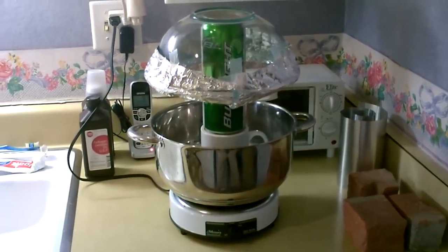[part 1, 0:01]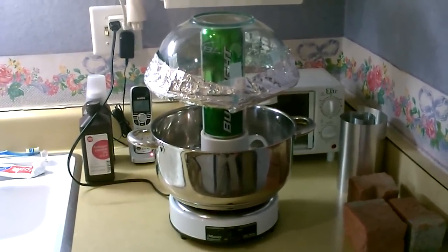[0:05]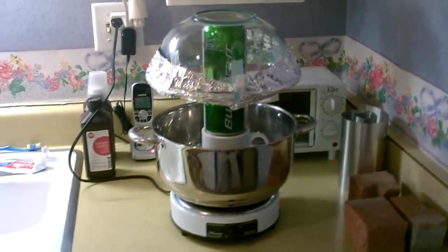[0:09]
Just a quick bit to show you how to make one of these DIY water distiller setups. This is my second, or jumbo, version.
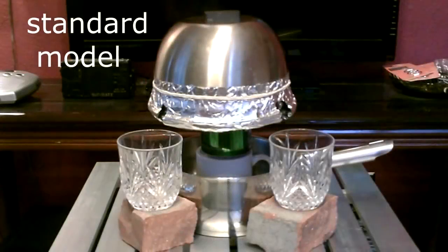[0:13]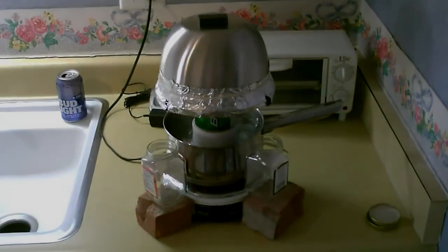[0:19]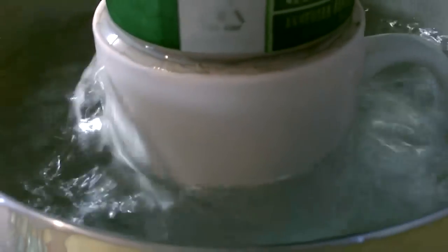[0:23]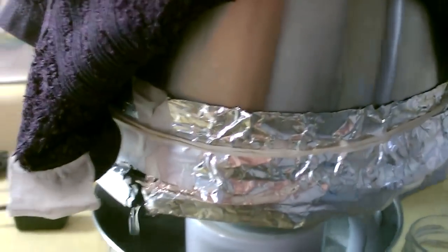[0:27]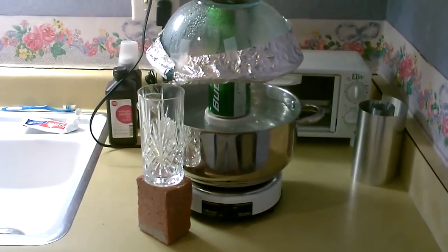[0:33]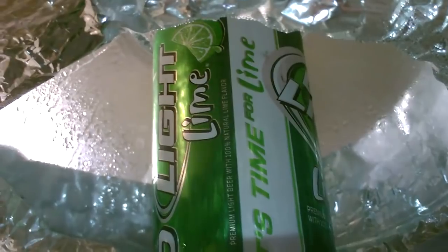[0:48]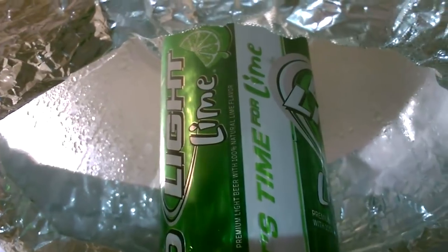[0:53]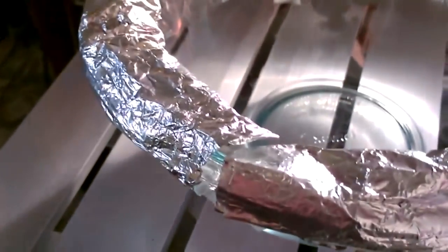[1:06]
A lot bigger. Quick shot of the underside. It's working great. All right, you can see the size of the trough on this one, really big. That'll hold a lot of water. All the water comes out in one spot right there.
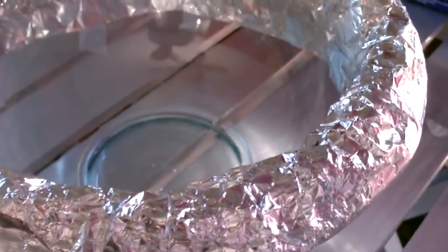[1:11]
Okay, this is my tap water. That's disgusting. That's really bad. Let's do another test on that. Yep, 620, 630. Holy smokes.
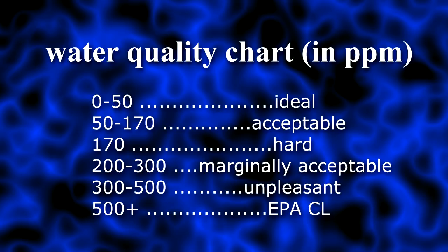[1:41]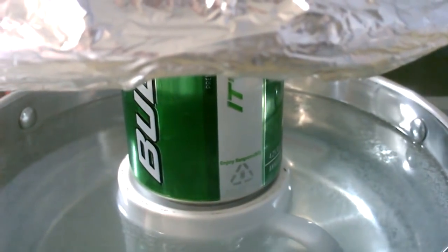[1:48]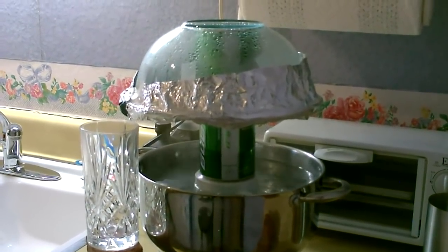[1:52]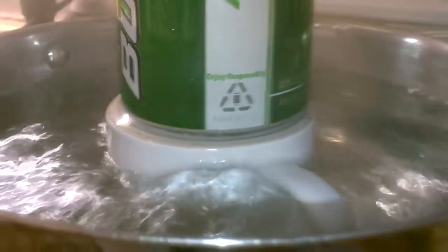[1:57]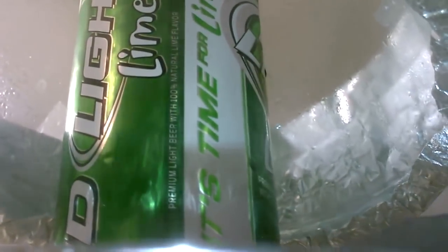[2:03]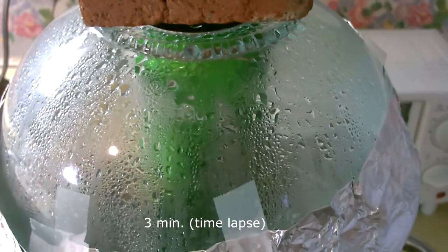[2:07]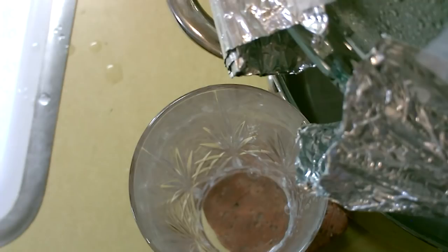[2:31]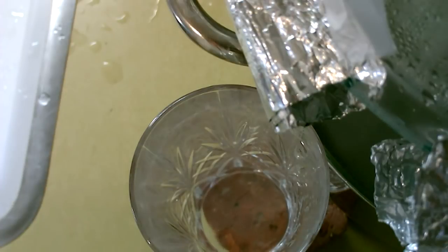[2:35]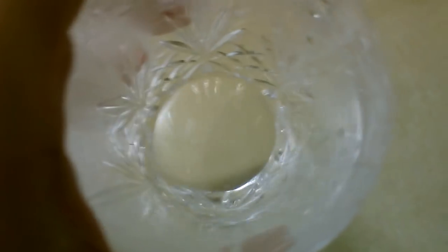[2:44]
Now let's distill it. I'll take another reading. So, let's go. All right, now let's take some water quality readings.
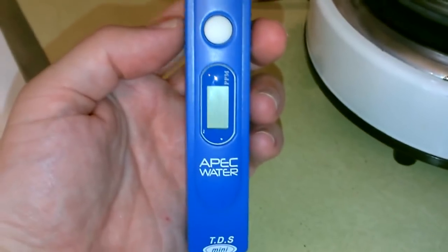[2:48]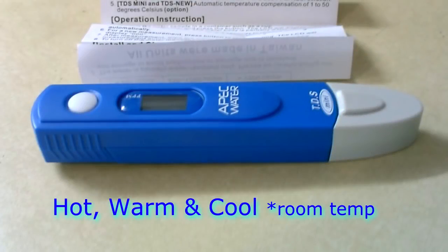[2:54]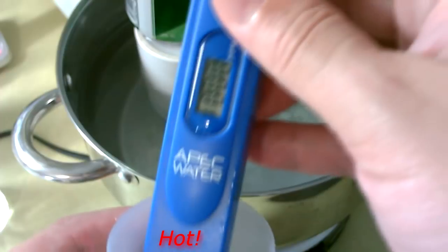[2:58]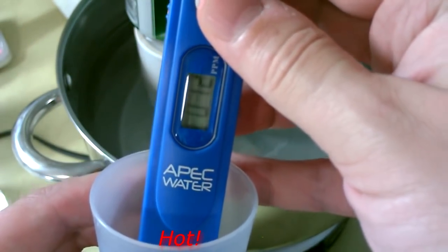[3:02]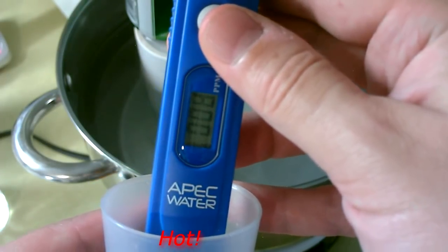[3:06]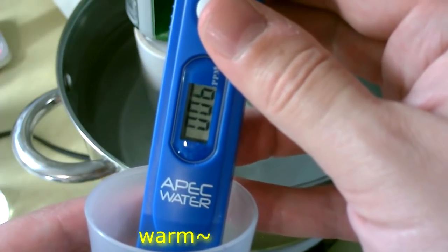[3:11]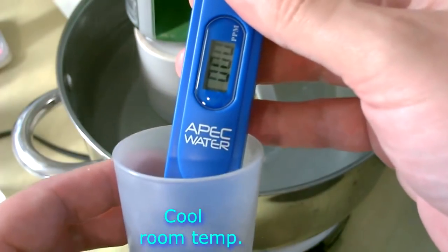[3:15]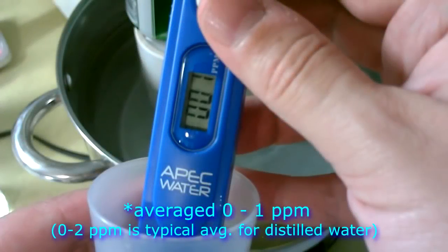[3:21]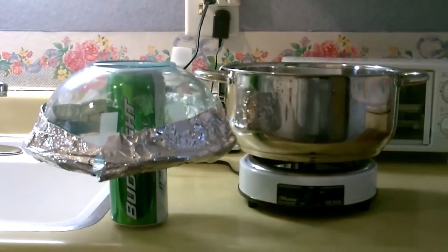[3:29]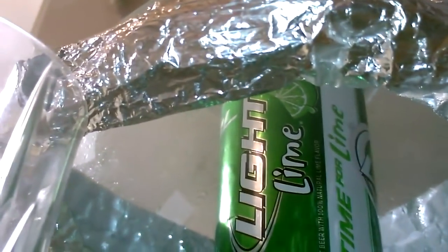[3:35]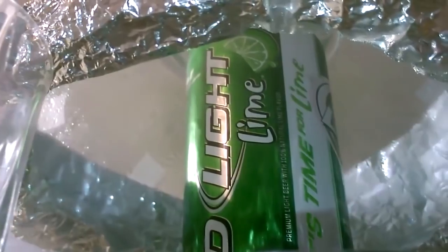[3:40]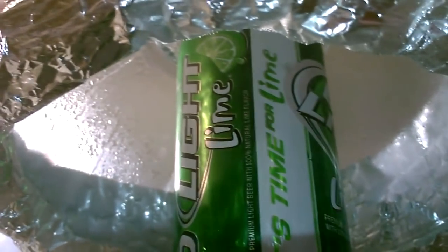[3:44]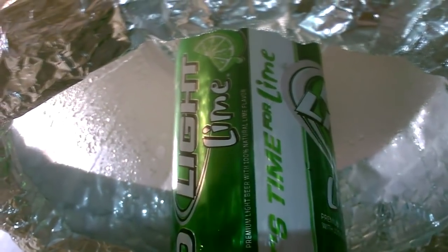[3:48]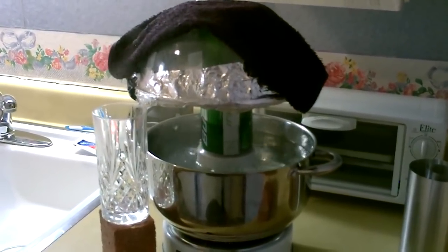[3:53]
Again, this one's got the really big trough on it, so it's going to hold a lot of water. You want to double, triple, or even quadruple the water output, just put some cold cloths on top of the glass.
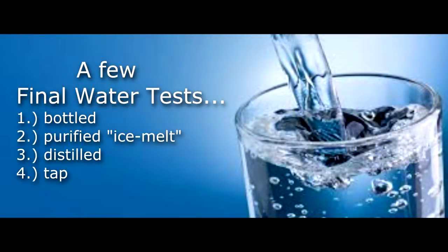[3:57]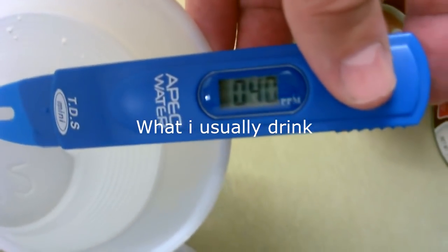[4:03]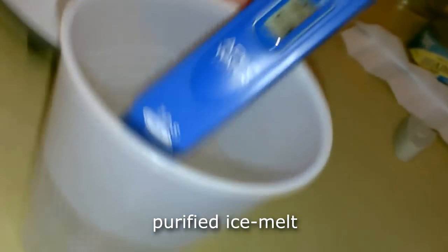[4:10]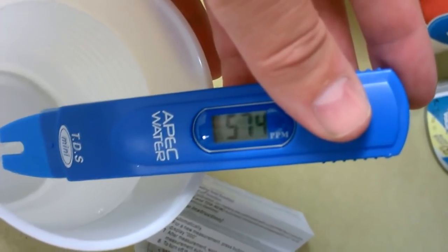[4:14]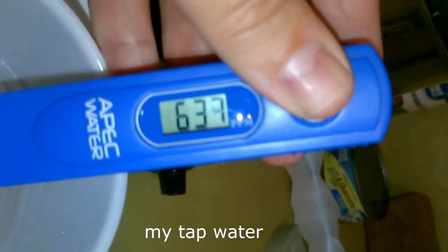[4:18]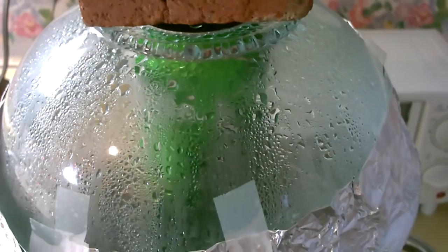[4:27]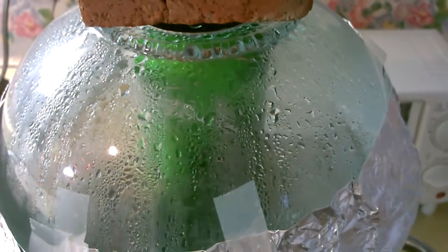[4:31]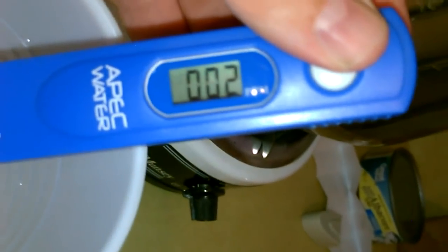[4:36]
That's a bottled water reading. That's disgusting. I got a 500 and something earlier. Anything over 500 though is considered unhealthy. Beautiful. Looks good.
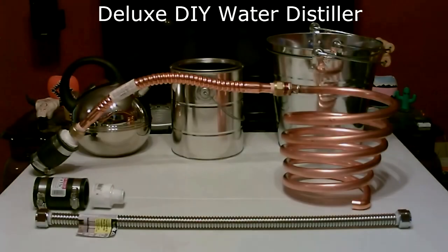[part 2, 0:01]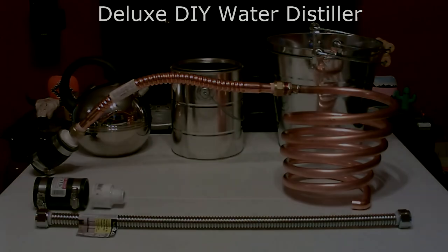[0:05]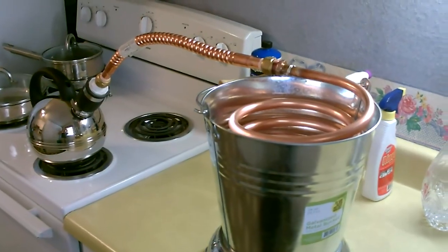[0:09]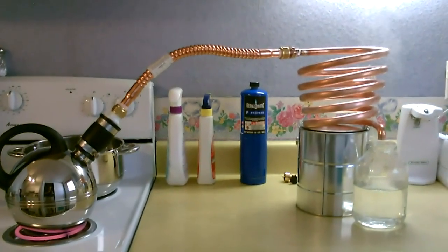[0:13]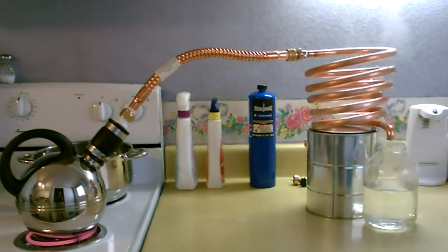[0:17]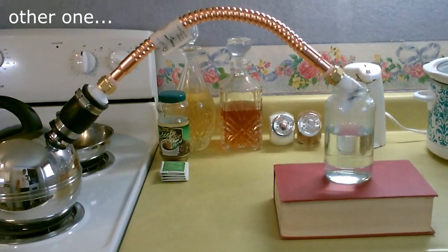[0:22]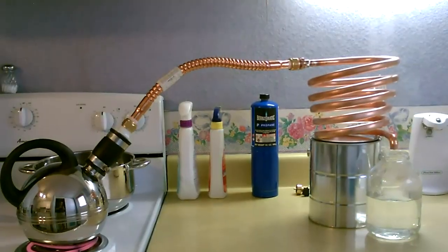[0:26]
Hey there, this is a quick video to show you a deluxe stovetop water still I put together. Like my other one, but better. Instead of a foot and a half of copper, it's 11 feet. Actually, 11 and a half feet total.
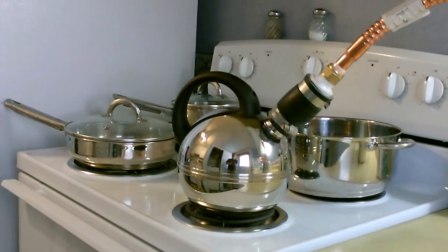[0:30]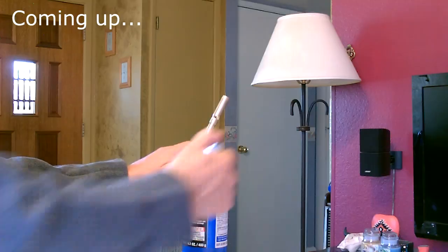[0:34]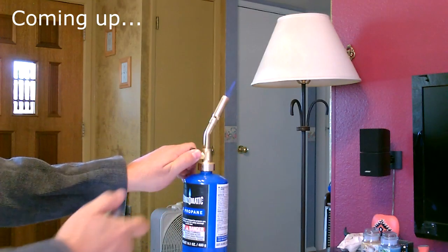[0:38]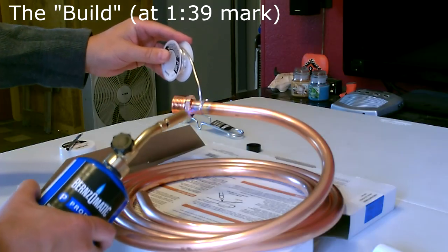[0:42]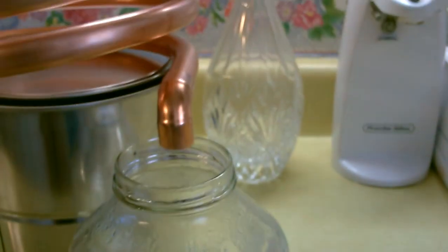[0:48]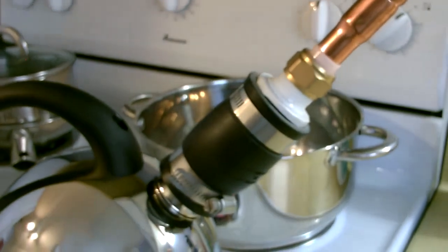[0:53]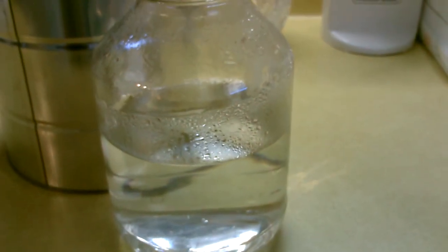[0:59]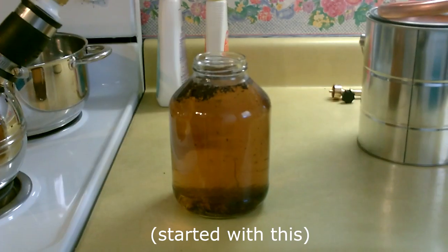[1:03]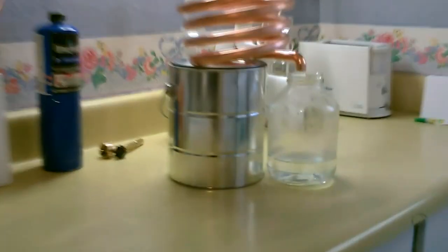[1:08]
Thing is just humming away. It's working awesome. No leaks. Everything's working great. Burner right now is on full blast. Most of the water in that kettle's gone already. It's all over here, and some in the air. It's working really good. Check that out.
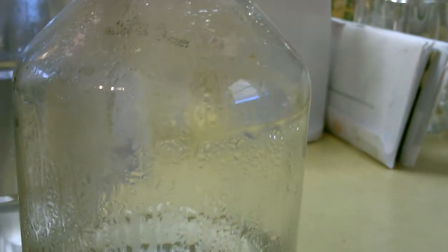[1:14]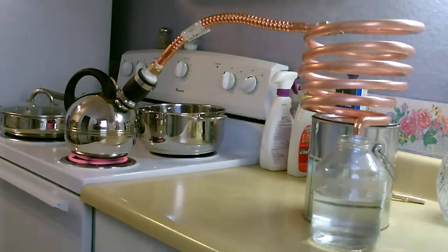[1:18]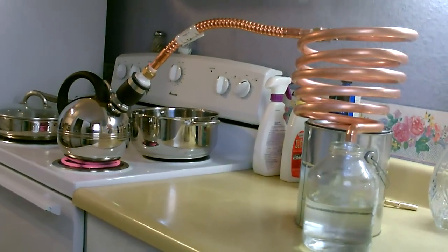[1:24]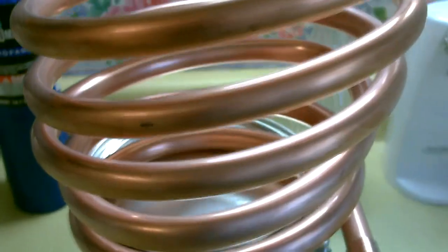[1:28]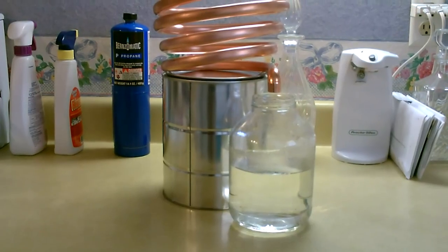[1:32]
That water's filling up pretty fast. That didn't take very long. That was about an hour and a half. That's almost a quart in an hour and a half.
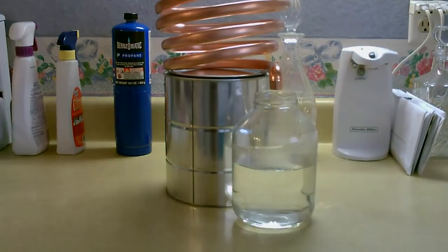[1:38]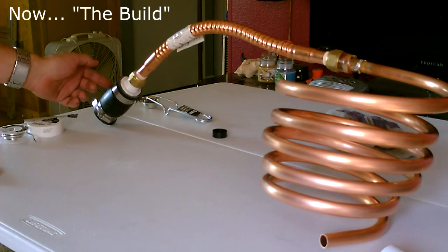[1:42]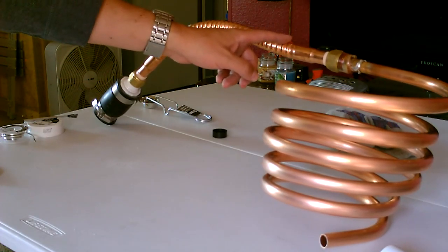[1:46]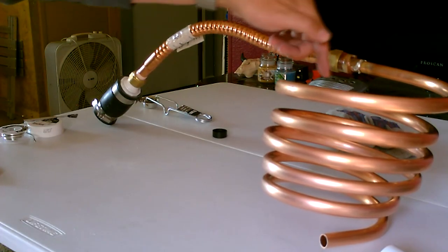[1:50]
Okay, this is your connector to the water source. Then you got the foot and a half of corrugated 3/4 inch copper pipe. Connects down here, reduces to the half inch. And then this is a 10-foot roll of half inch copper tubing.
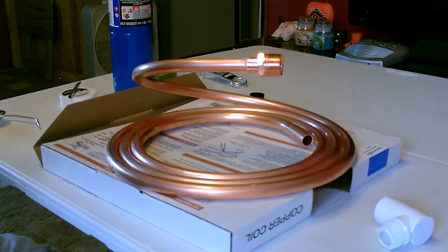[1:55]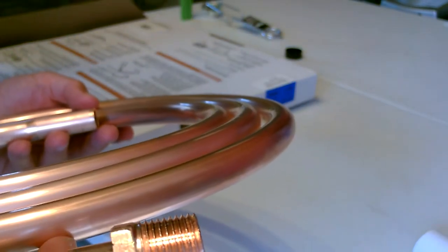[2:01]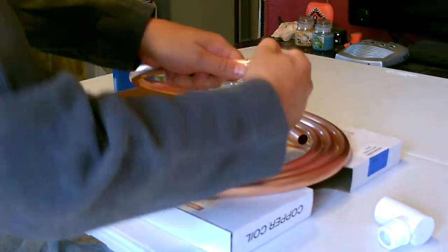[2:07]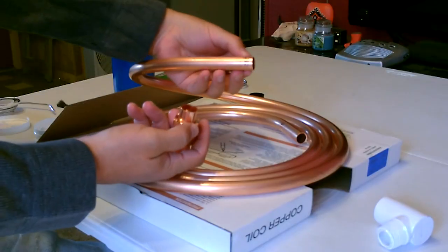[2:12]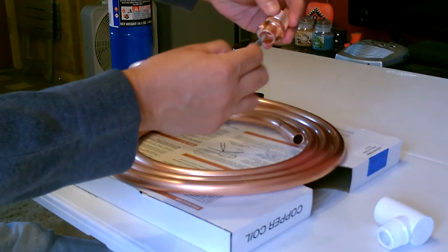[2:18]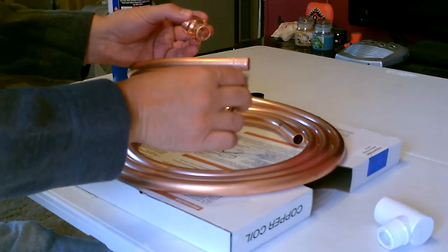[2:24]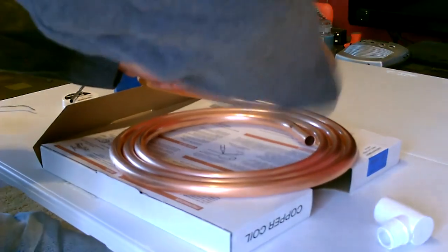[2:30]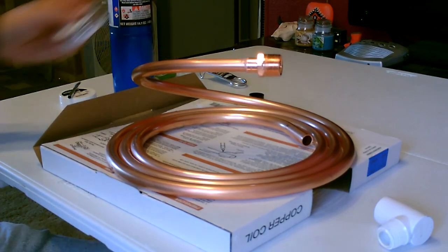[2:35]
Alright, so this is the adapter I'm going to use. It's a 3/4 inch threaded to half inch. Alright, now let's go ahead and prepare this. Okay, I sanded that up a little bit. Now I'm just going to put some flux on here. Like that. All we gotta do now is hit it with some solder.
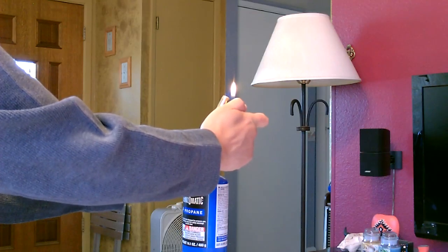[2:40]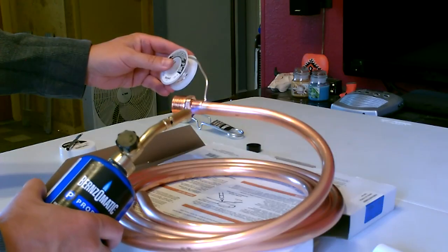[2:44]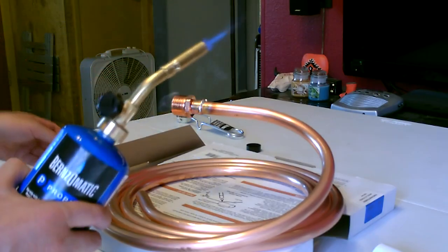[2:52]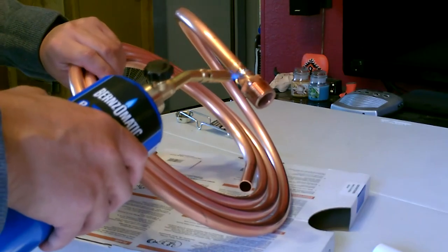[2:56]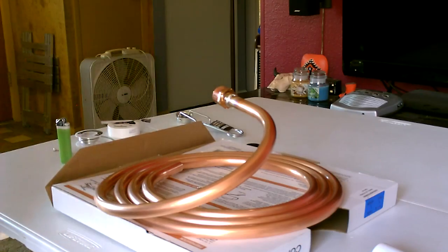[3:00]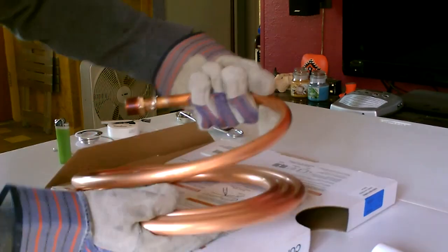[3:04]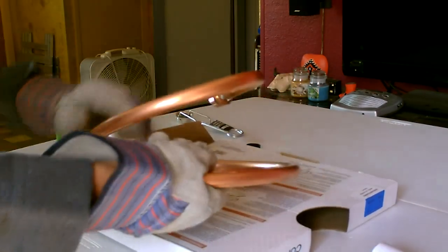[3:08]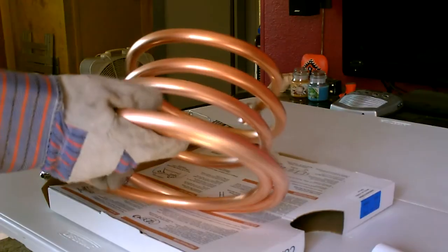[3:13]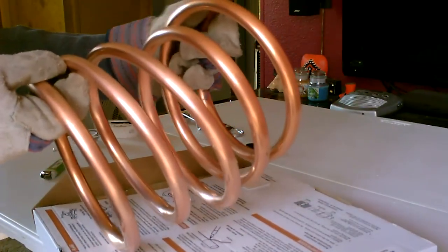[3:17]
Okay, now I'm going to go ahead and bend this into a tight spiral. Just kind of slowly work at it. Don't force it. Okay, that's a good start, right about there. Now I'll see how much tighter I can get it.
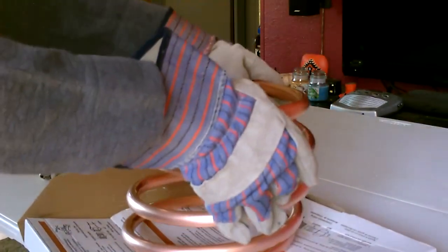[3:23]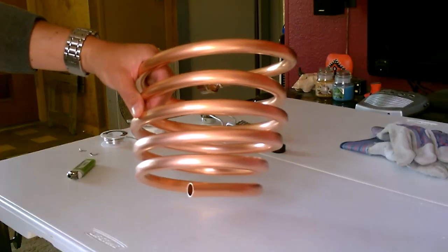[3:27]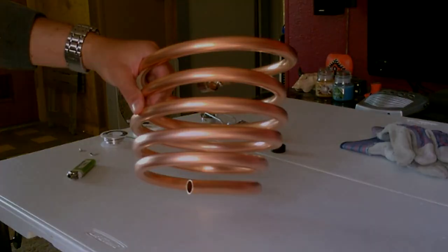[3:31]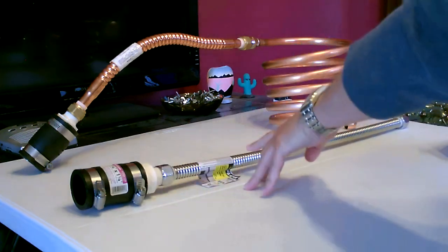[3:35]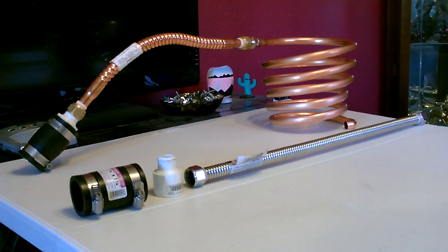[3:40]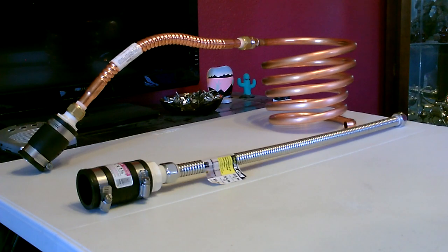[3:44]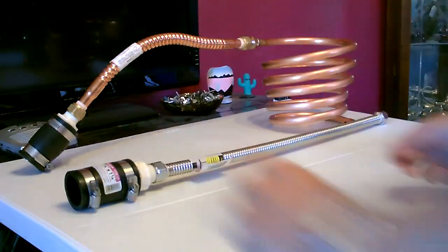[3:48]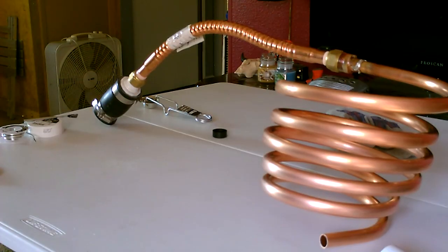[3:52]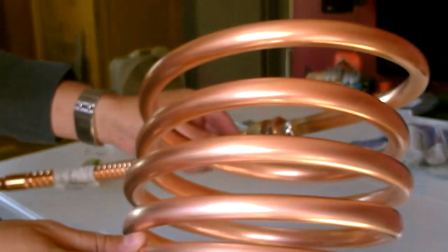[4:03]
Here's just a quick shot to show you how this part goes together. You can use the stainless steel or the copper. Then hook up to there. Alright, here it is. We got the 10 feet connected to the foot and a half corrugated, and this connector goes over to the teapot or water source. That's almost 12 feet of coil total.
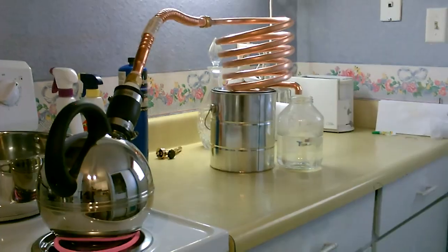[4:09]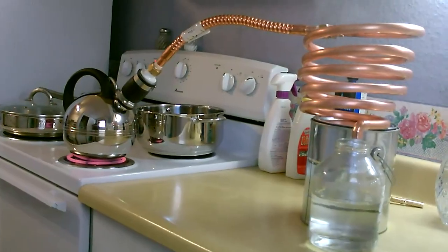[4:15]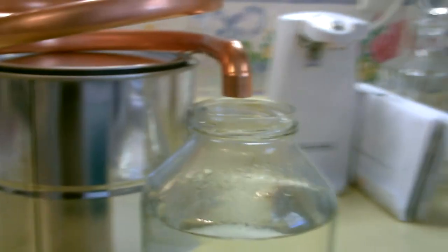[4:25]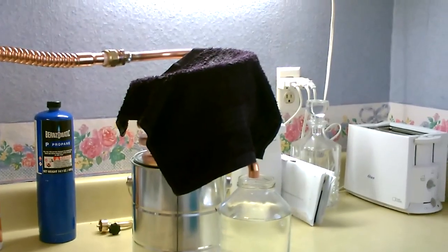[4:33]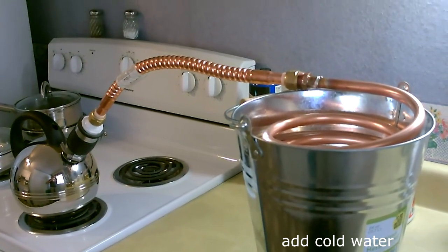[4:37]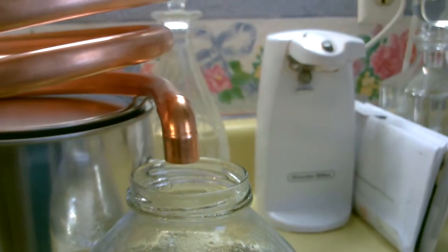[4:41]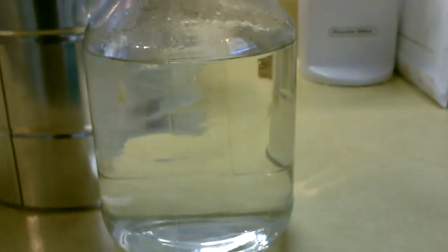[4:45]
Alright, there it is. Ton of clean distilled water. Again, a couple quick things to make it go even faster. Put some cold towels around the coil or even submerge that in water. Maybe tent a little bit of aluminum foil over the top to keep some of the steam in. Extend the copper tube down a little bit into the glass jar.
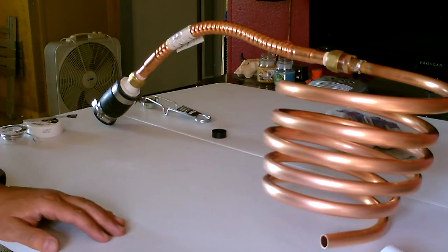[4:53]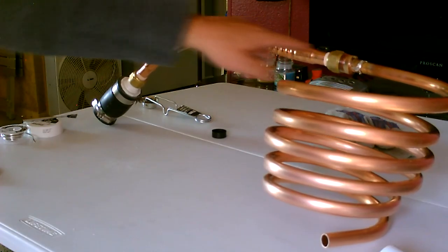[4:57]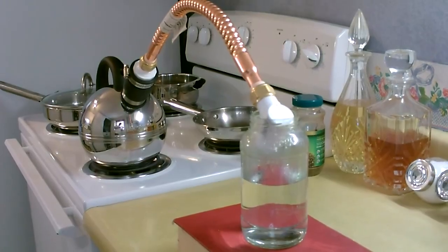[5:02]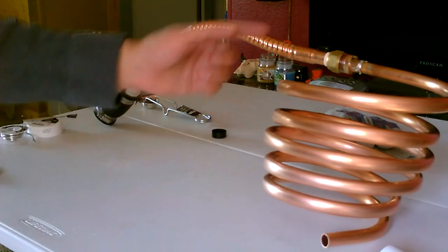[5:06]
And that's about it, because everything's tight. The seal stayed completely tight the whole time. You can do it like where it just ends right here and put this right into the glass like I did in the first one. You still get a ton of water, but the more copper you add, the more time it has to condense down into liquid water. That's like 2 minutes of water right there.
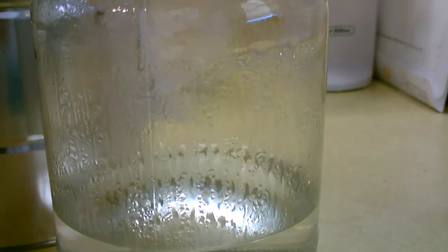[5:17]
I'd say this one produces water about twice as fast as the original model. Both work good, though.